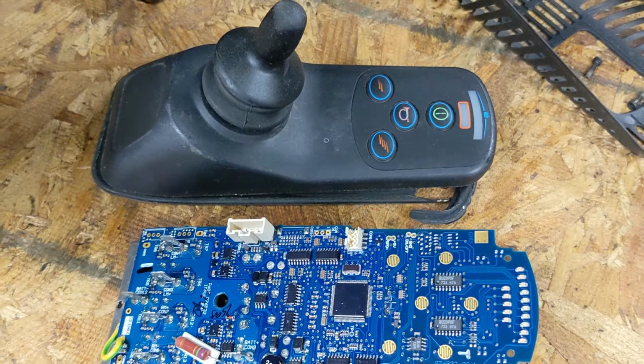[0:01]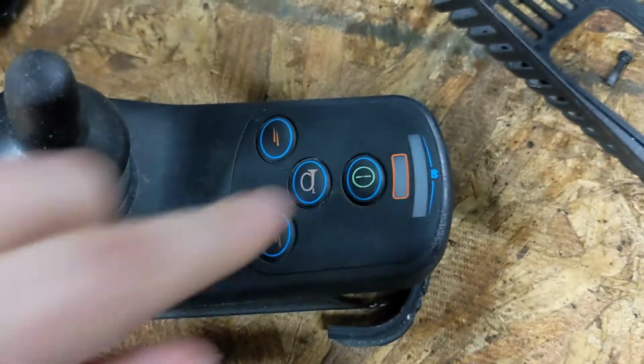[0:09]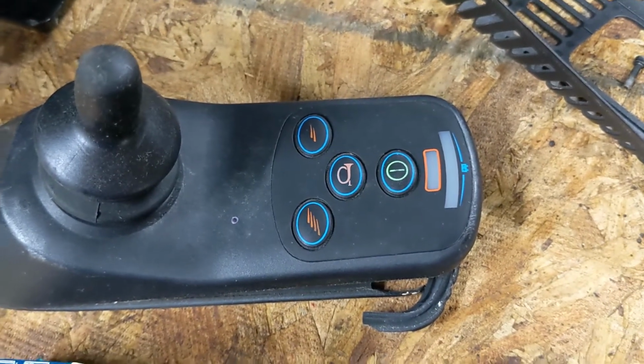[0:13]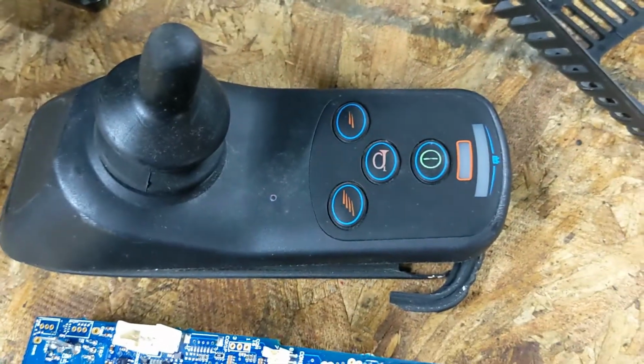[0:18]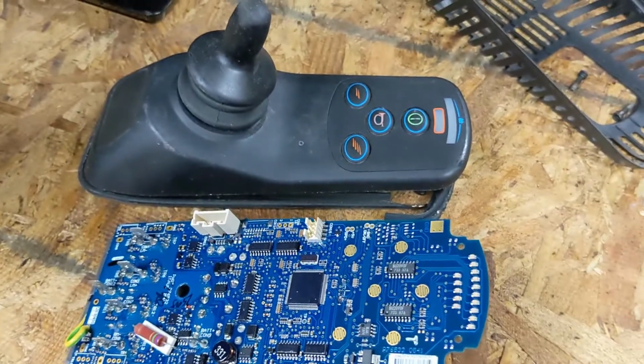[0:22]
Okay, so your ShopRider wheelchair has developed error code 8, in which 8 of the LEDs here, 3 red, 4 yellow, and 1 green, flash rapidly, signaling error code 8. That means on this model that there's something wrong with the control board.
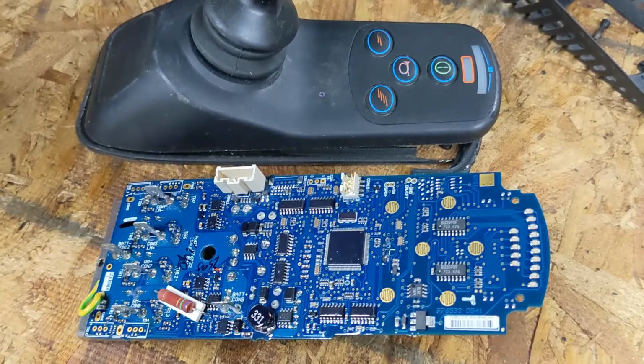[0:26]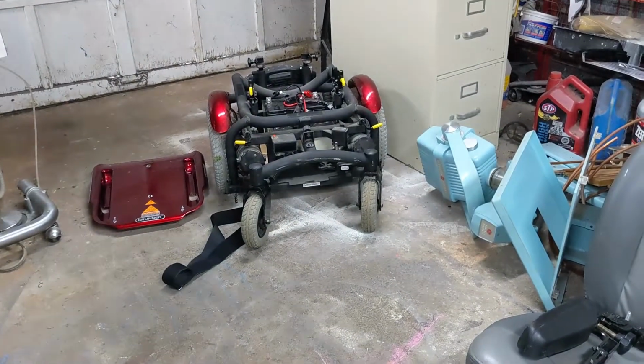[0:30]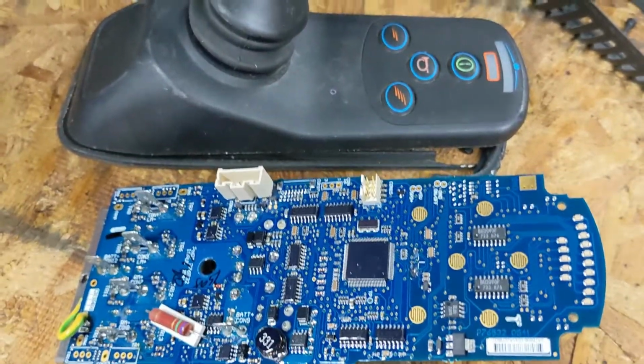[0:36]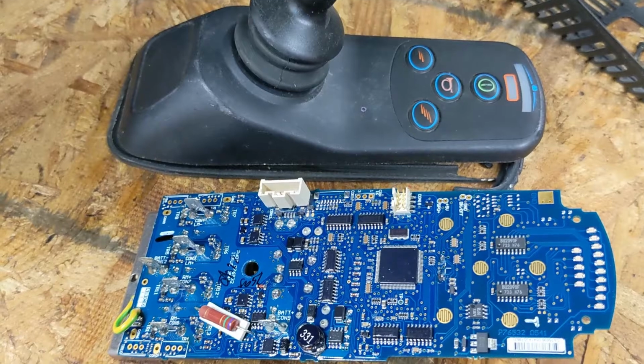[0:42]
If you're bothering to look at something this obscure on the web, it probably means you own one of the ShopRider wheelchairs, and you have just now discovered that error code 8 means that the brain board here is fried and inoperable, and you've found out that the things cost several hundred to $1,000 or more to replace. So I'm going to give you a quick overview of how to fix this and then get into the details.
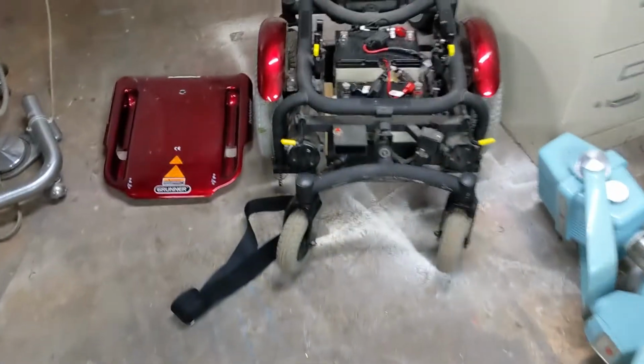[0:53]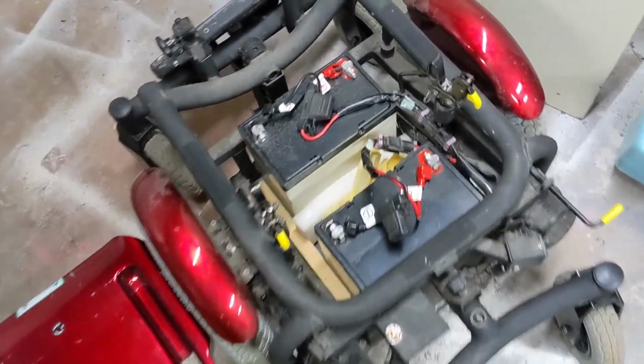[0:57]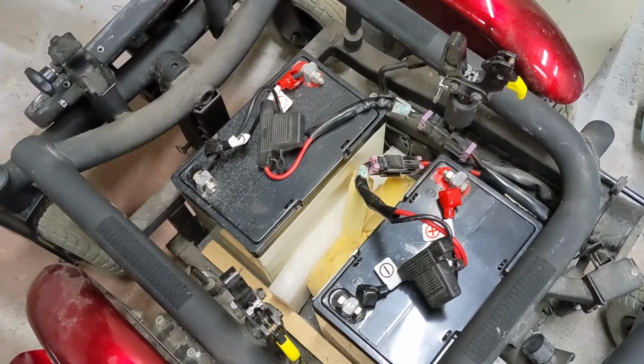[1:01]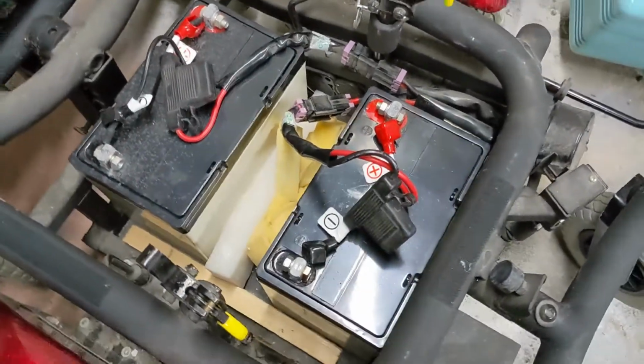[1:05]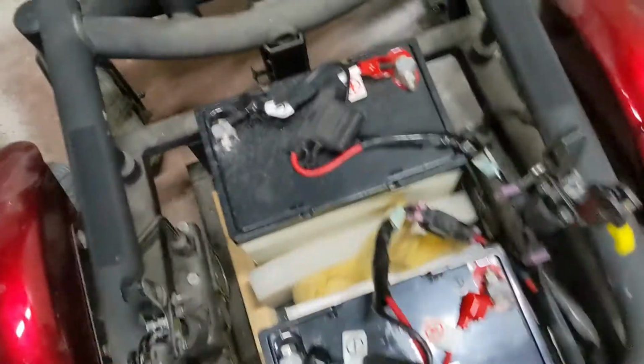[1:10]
The ShopRider wheelchair that I'm working on here is the 6-wheeled model. It runs on two 12-volt lead-acid deep-cycle batteries. There's nothing special about them. You can see that the battery compartment is big enough to contain many different types and sizes of batteries. This particular style is just a typical one.
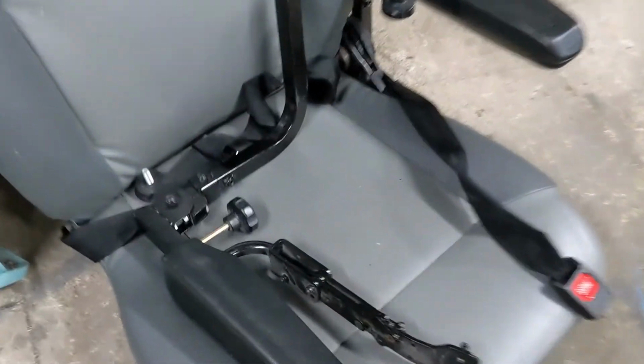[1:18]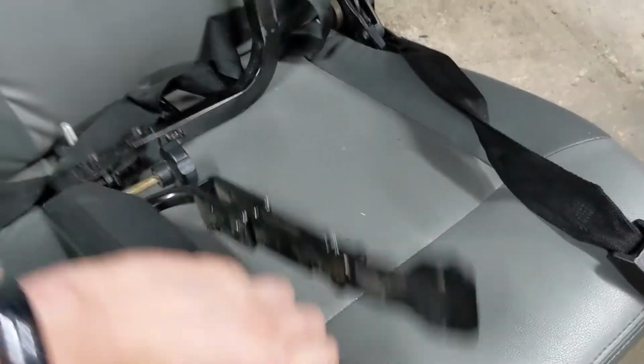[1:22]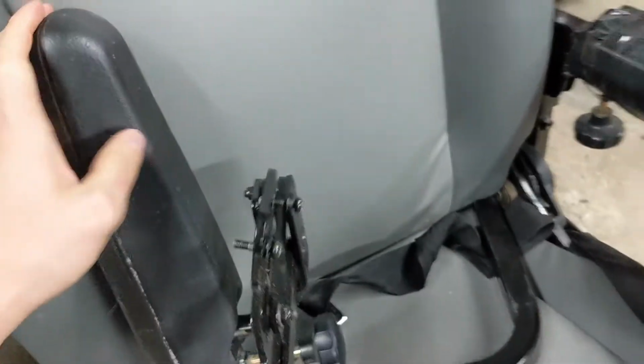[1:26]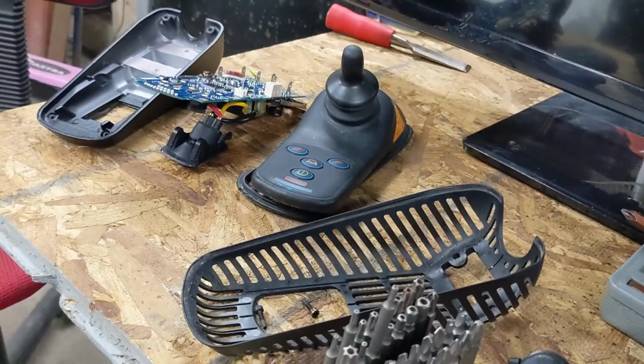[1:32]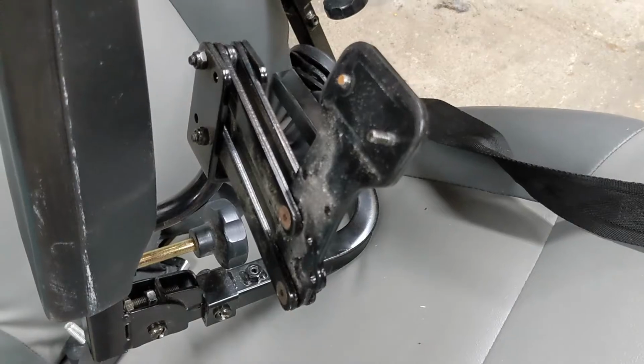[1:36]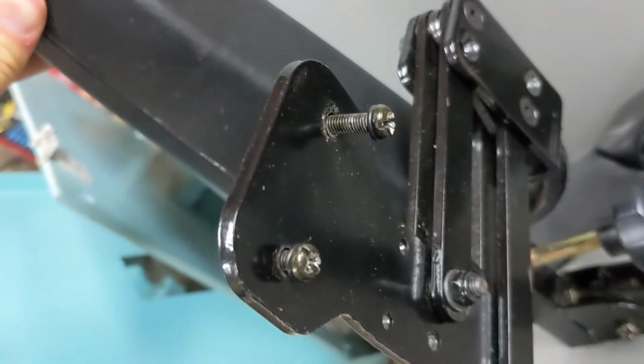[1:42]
Then the chair over here features the arm on the side where the controls are usually mounted. At least on this one, the controls swing out sideways. And this is where this mounting would normally be for the control box over here. Now, the first thing you've got to do is remove the control box from its mounting arm. This is 2 simple screws, but simple they are not.
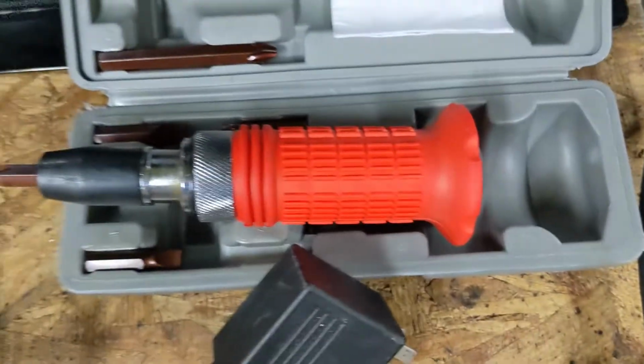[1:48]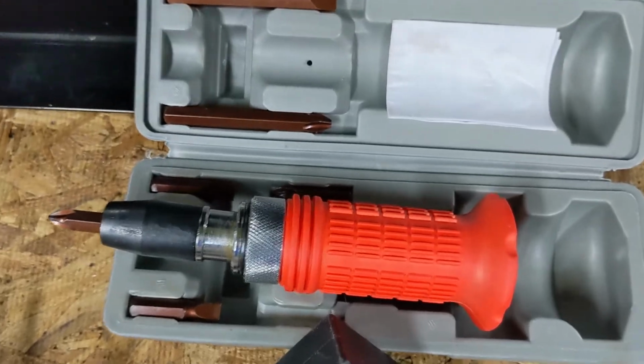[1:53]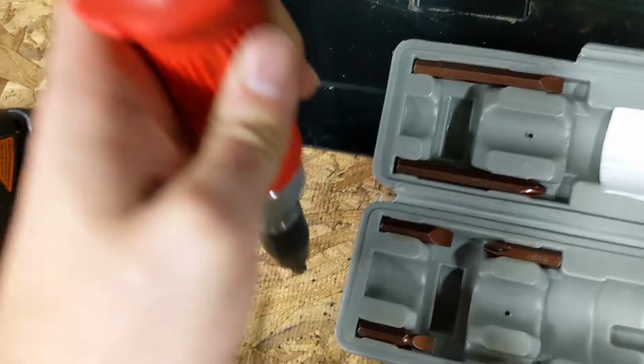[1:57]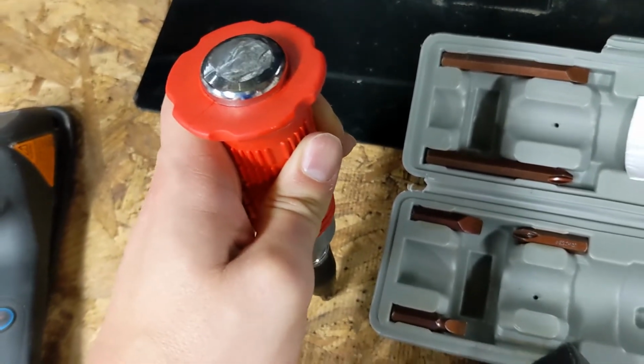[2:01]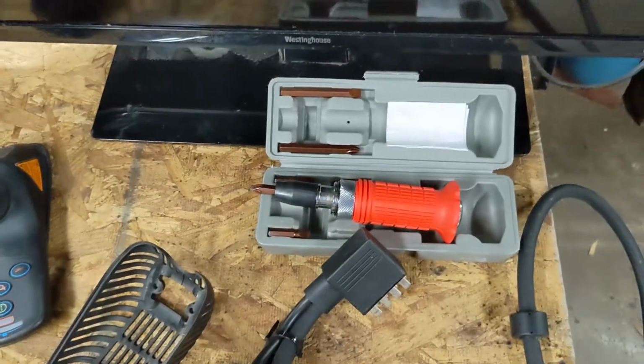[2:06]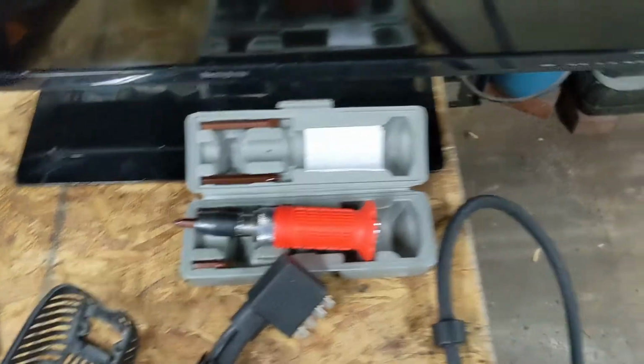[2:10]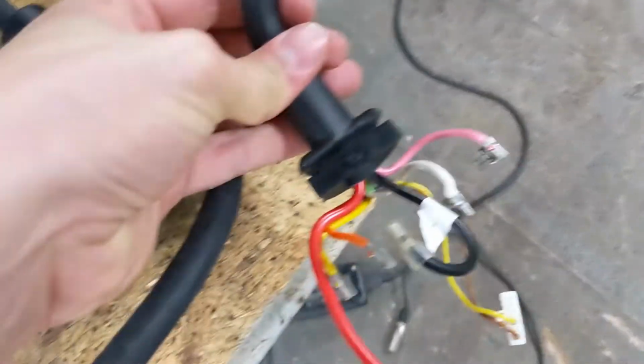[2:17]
They glued the buggers in there. So you're going to need a hammer tool like this. This is about 10 to 15 bucks from Harbor Freight. The point of this is you put this down into the screw and you literally hit it with a hammer so that the down force twists the screw as it pushes down. If that sounds extreme, yeah, you really will need that, because otherwise you'll just strip the screw trying to get it out.
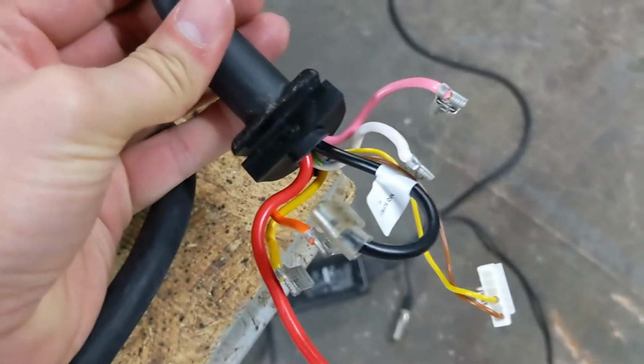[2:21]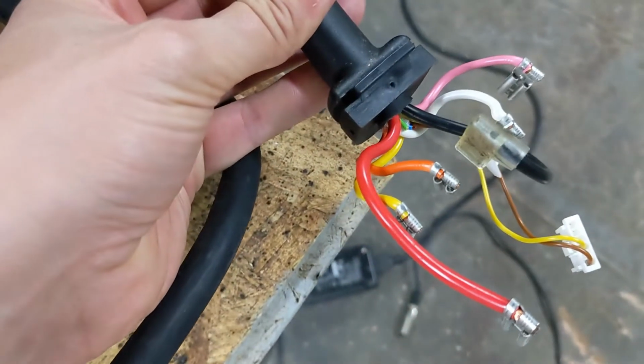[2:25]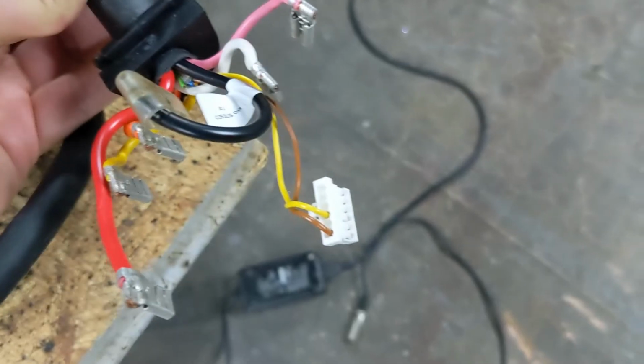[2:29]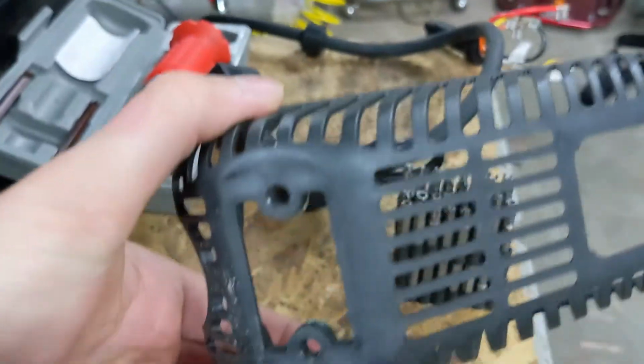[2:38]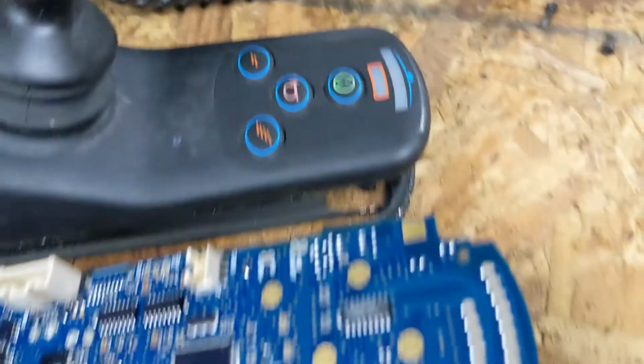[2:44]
The piece, at least on this model, unplugs here, though I believe there are other configurations available. This is the wire layout. The way this is set up is pink and white drive one motor, yellow and orange drive the other. Power in comes from black and red, and I'm not sure what the little tab on the side there is. That's probably some kind of error wire.
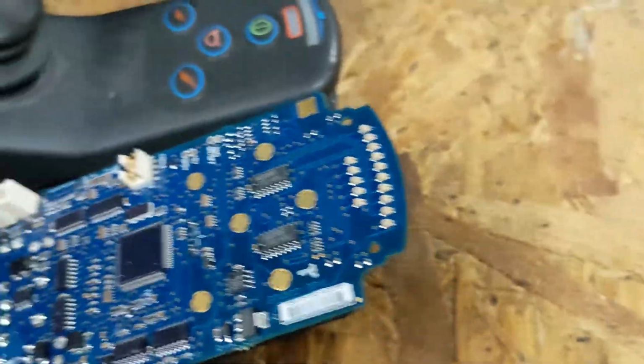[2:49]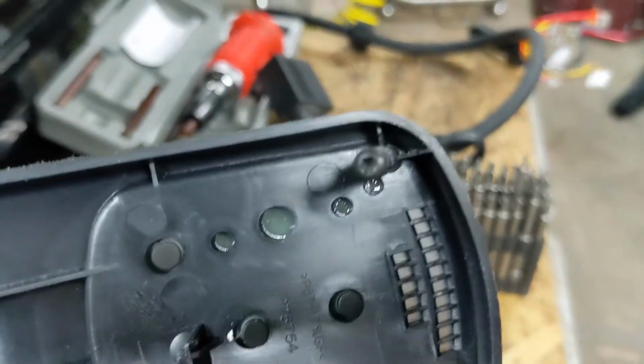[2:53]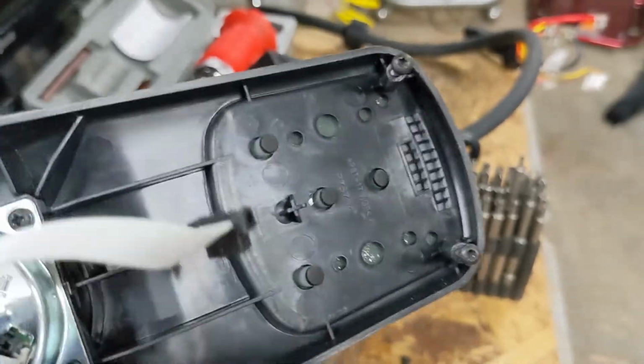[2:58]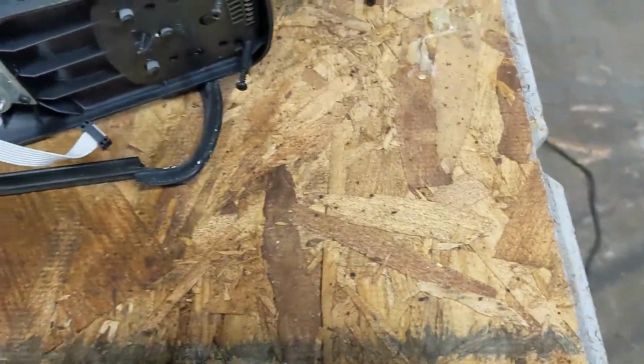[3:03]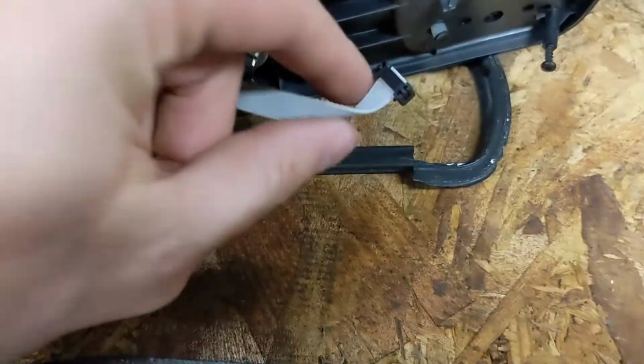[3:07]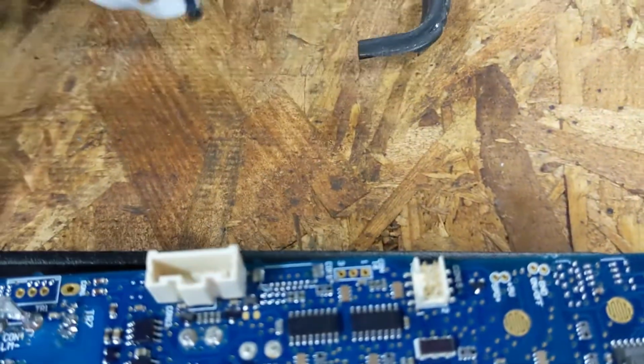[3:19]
Once you have removed the 2 screws here that anchor it to the arm of the wheelchair, then the whole assembly can be taken apart. This is held in place by 4 screws. 1, 2, 3, 4. These are star keys, but they're not keyed with anything special, so a standard star bit will work. Once that's open, what will greet you is something a lot like this. This is all put together. This plugs directly into here in the way you would expect. Just like that. So just pop that out, set that aside,
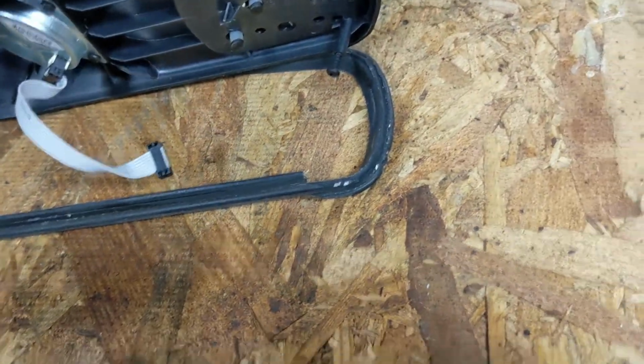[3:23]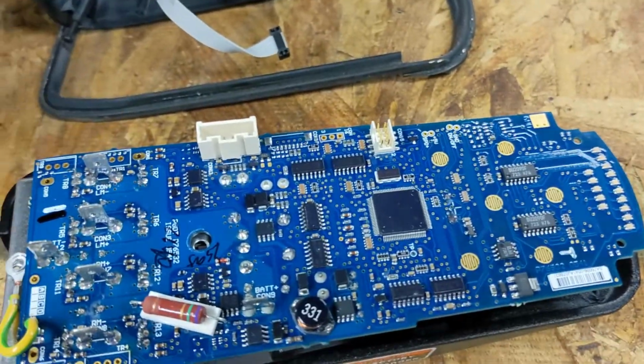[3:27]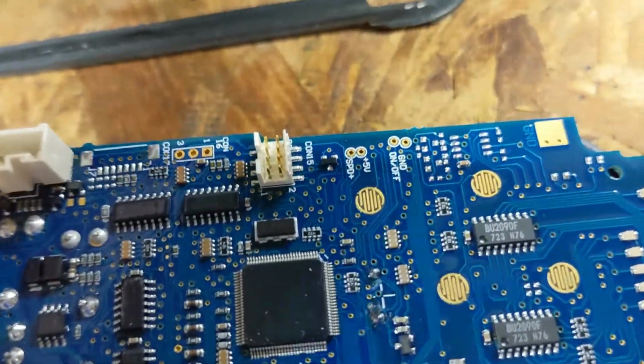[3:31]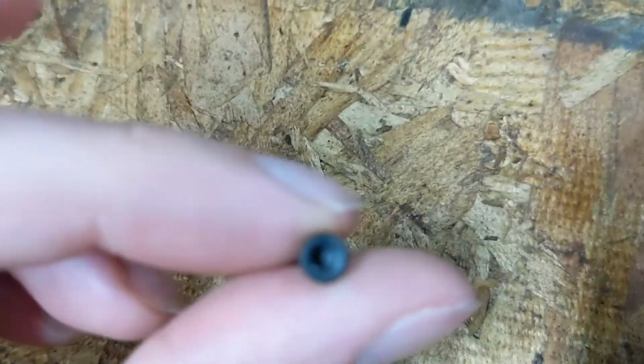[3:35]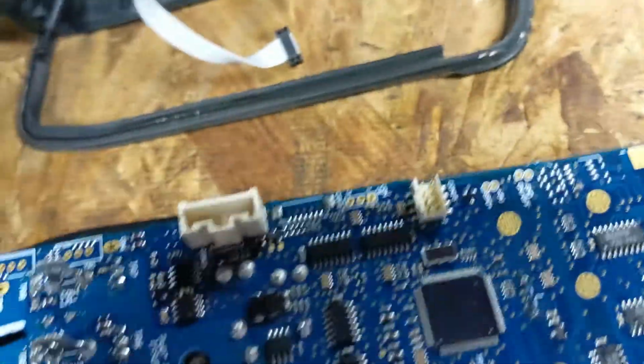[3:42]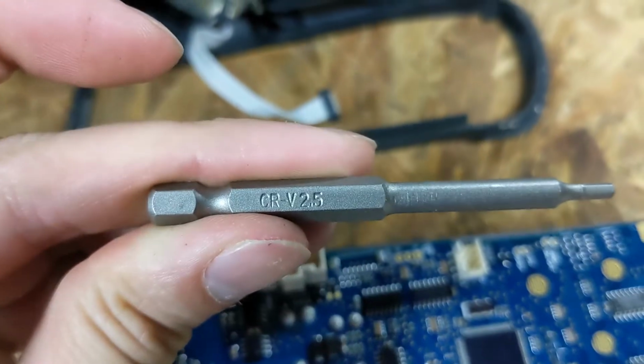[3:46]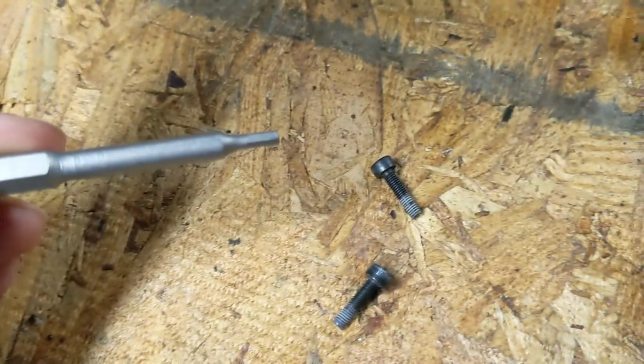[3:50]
take off the gasket as well. You won't need that for this operation. Now, once you get to here, this thing seems to be one gigantic brick, and it's very hard to see how it works, but it's actually held together by 2 bolts. These 2 little tiny bolts, they're not star keys, they're hex heads. Let's see, are these labeled? Yeah, okay. This is the hex head key that operates these 2 bolts.
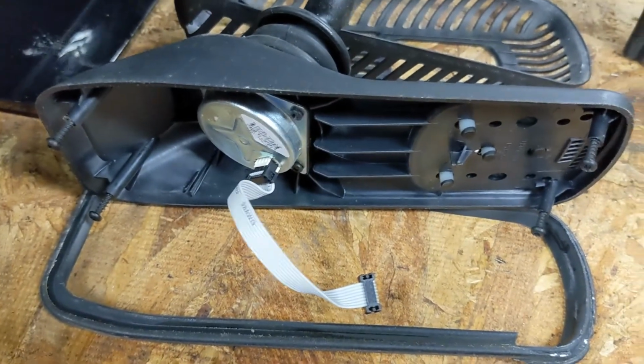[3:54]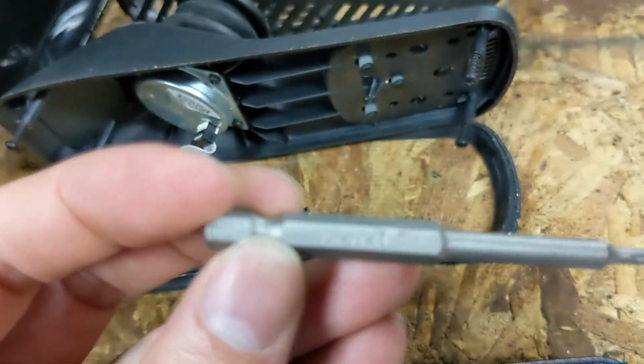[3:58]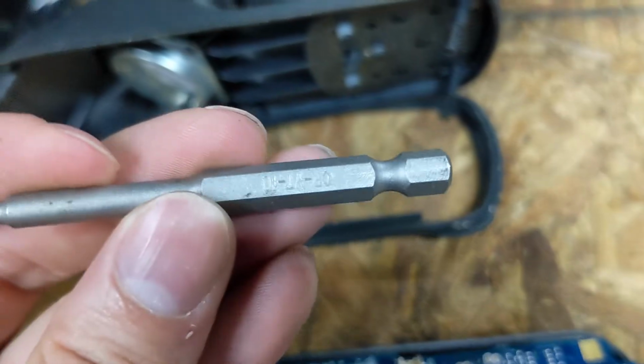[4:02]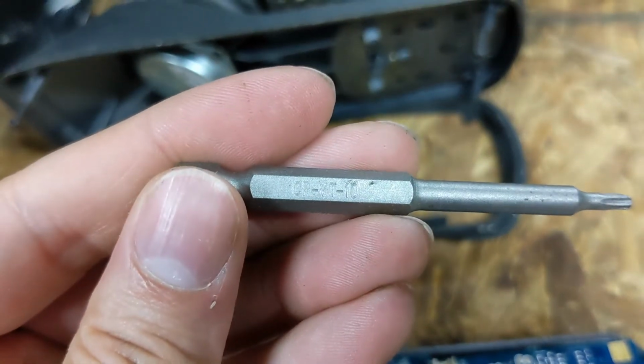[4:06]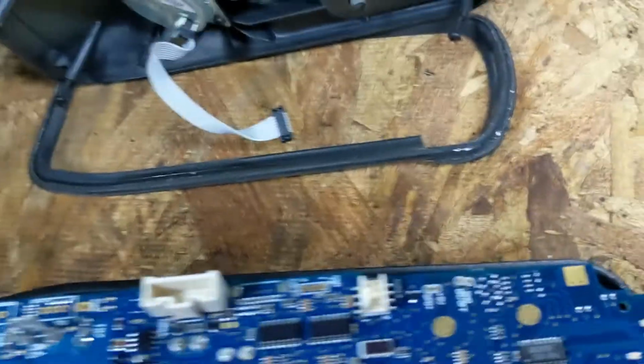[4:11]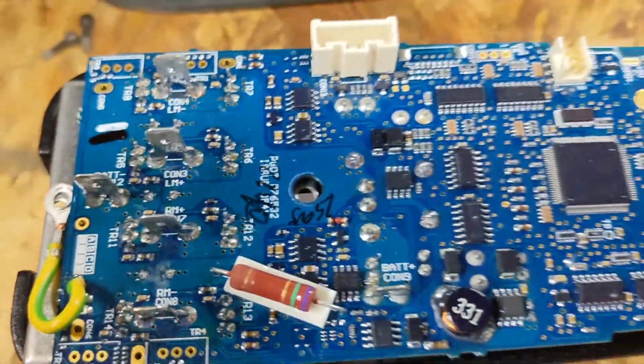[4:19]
And if you're interested, the star key that will do the 4 bolts that hold that on is, let's see, is this right side up? No, I'm holding it upside down. Okay. This is the star key that'll work for that. There you go. So that's how you get this thing apart. These 2 screws are not nearly so bad. They're not glued in. Once you get these apart, you can take this apart with one caveat.
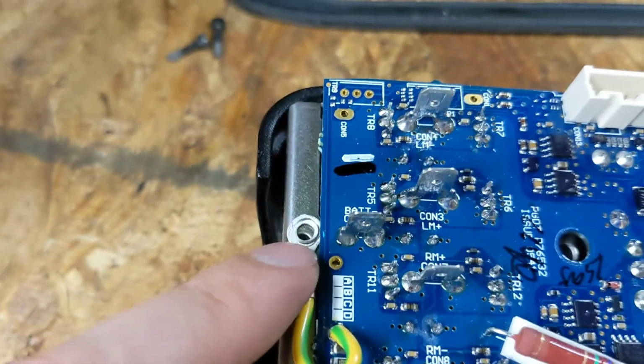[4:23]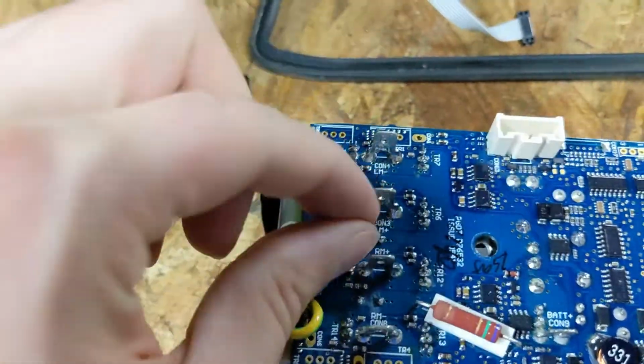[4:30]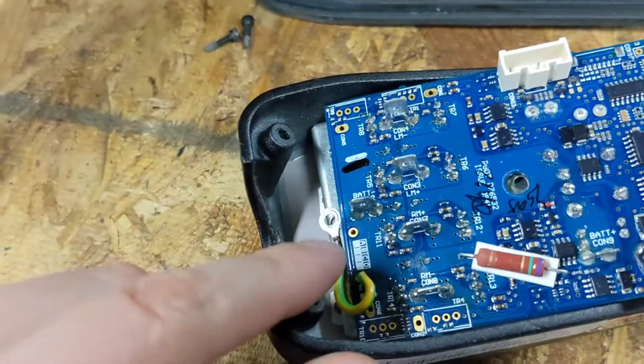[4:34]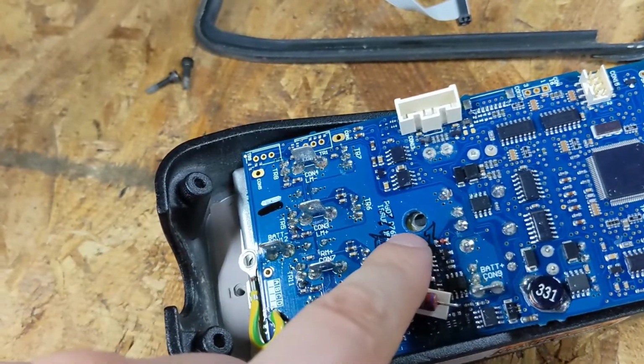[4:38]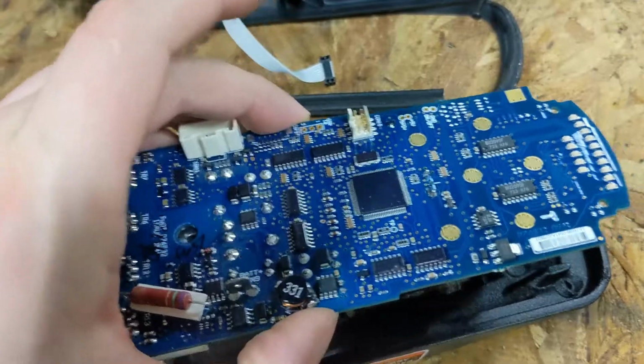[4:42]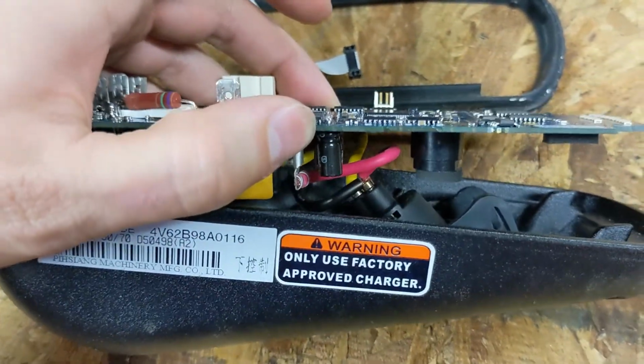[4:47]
This screw back here is not accessible until you pull these wires off. So when you open this thing up, you've got to pluck off all the wires, carefully taking those off with a pair of pliers. That exposes this last screw here on the back. Once this and this have been removed, then you can pull this part way out. It will then snag on the power charger port, which you see here.
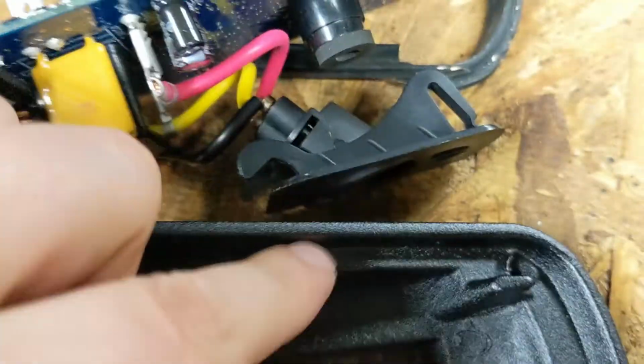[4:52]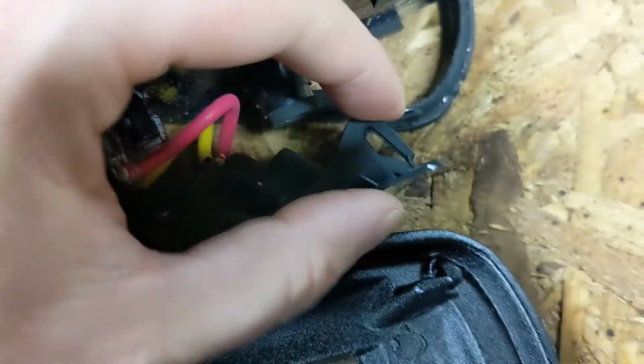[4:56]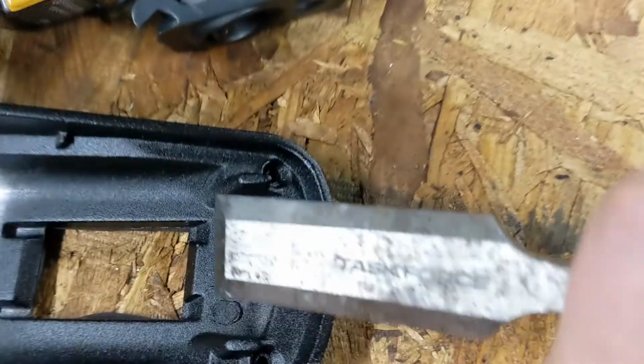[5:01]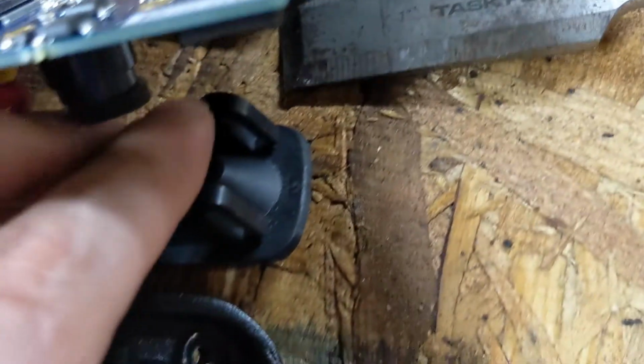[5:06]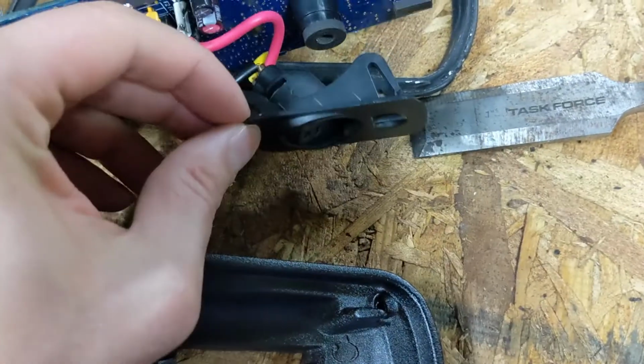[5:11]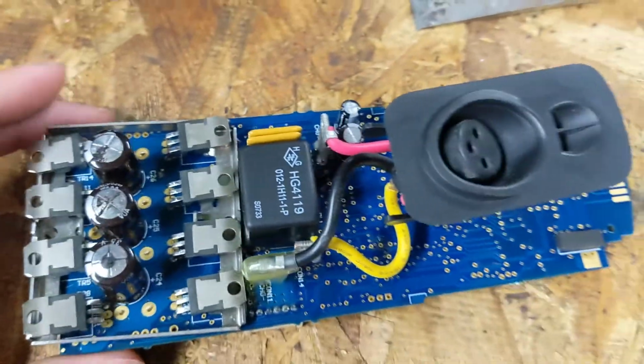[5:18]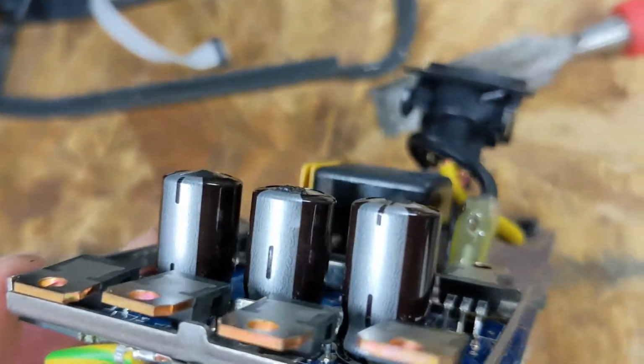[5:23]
The power charger port is designed to hook in here, and then there are 2 tabs here that lock it into place. So you've got to hold this like this. Take a chisel or other wide screwdriver and press down on both of these two tabs at once. Once that's the case, this charger port will pop out, and then the whole assembly can be disassembled. Now, a quick look at this on the underside shows the issue here. Anyone that's worked on electronics before immediately knows what we're looking at here.
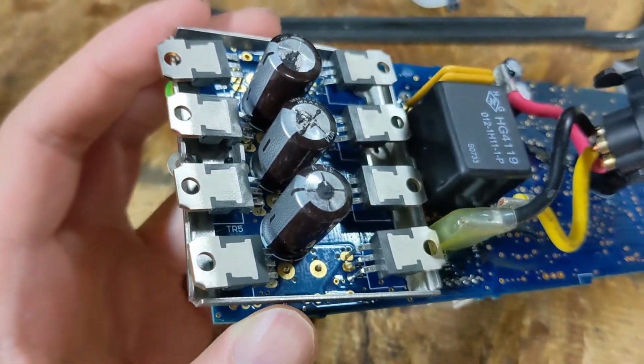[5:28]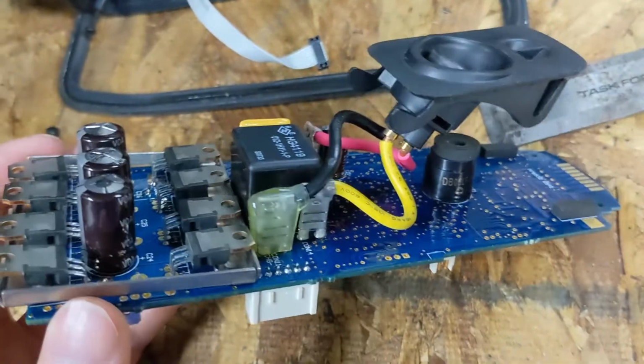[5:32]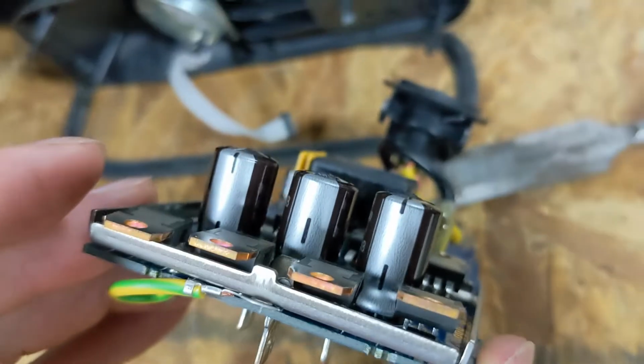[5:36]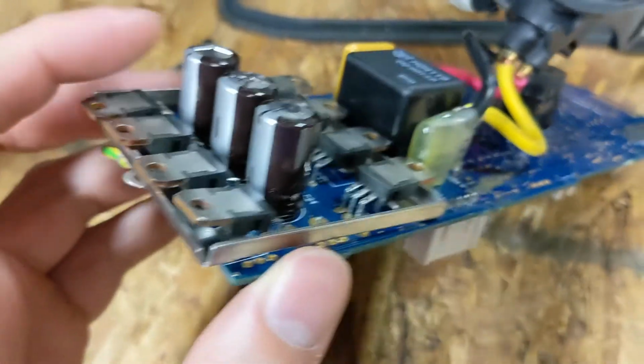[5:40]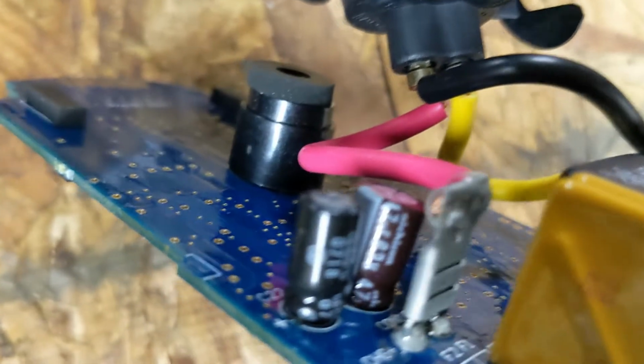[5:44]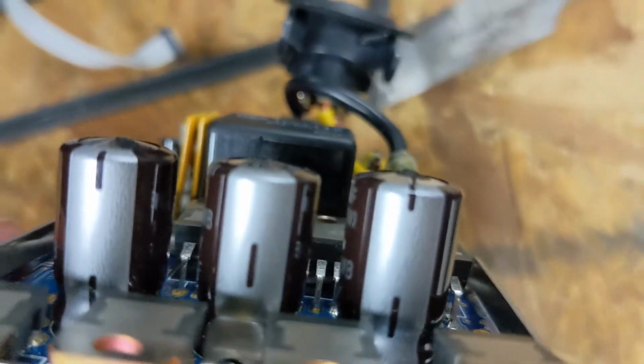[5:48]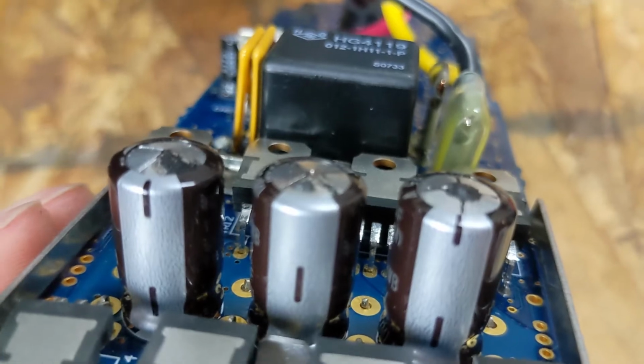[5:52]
I had to look this up, and credit goes to the repair guy who put this out on the web, but the reason that these things fail and give error code 8, and apparently sometimes error code 7, is that the three, I believe these are electrolytic capacitors here, fail. A good capacitor should always have a flat top. These are generic good capacitors. Whenever you see a capacitor like this where the top has bulged out like that, that means the capacitor is trash and you have to replace it.
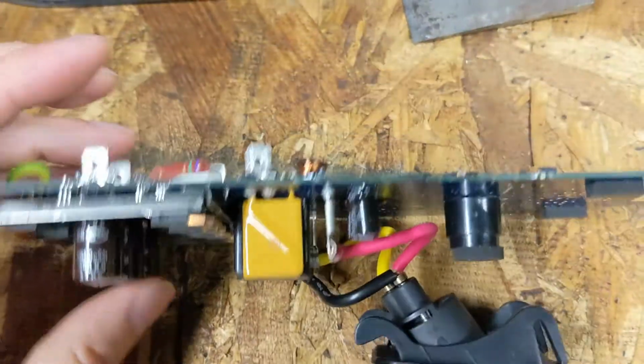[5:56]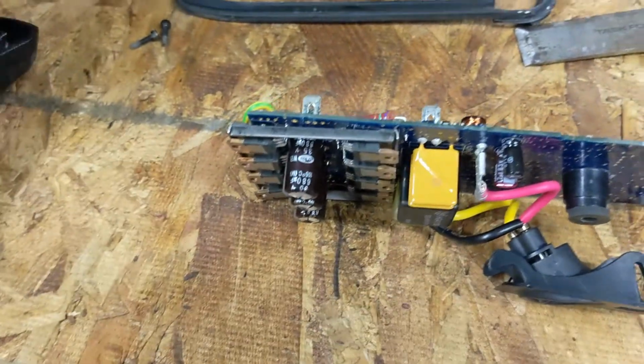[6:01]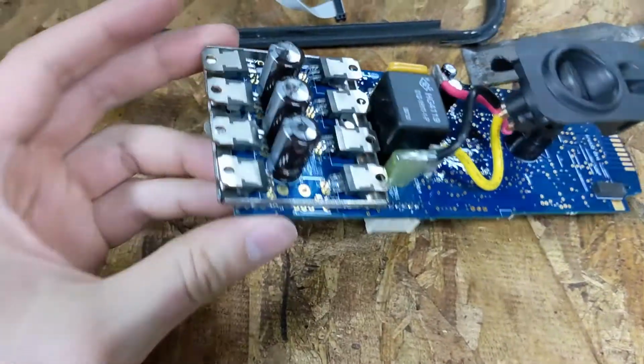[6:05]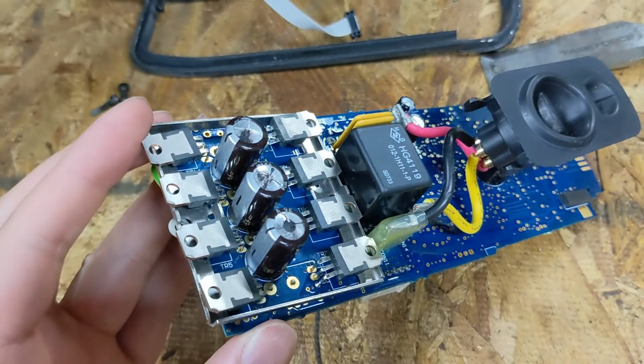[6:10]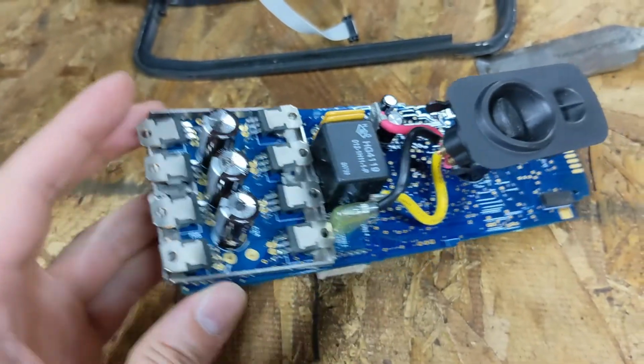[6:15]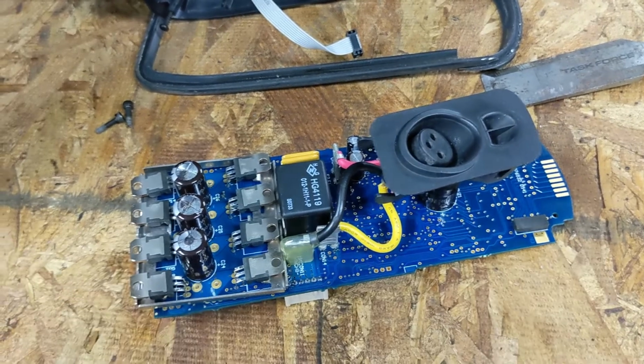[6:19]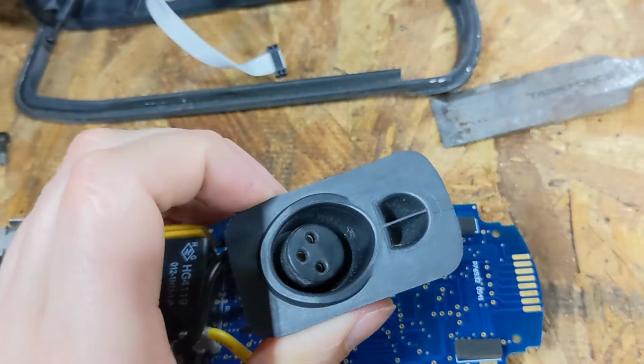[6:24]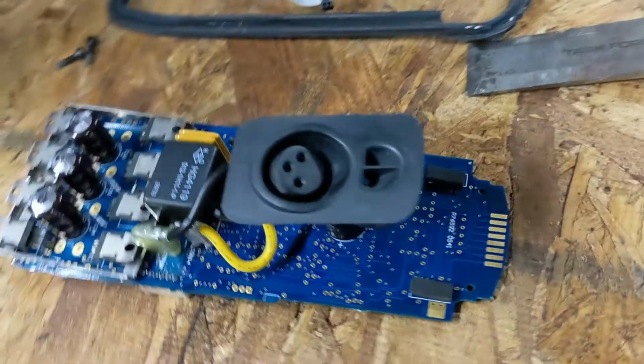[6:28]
The bad news on a setup like this is if you ask for the entire box, you're going to pay $250 to $1,000 depending on how good you are at shopping. The capacitors, by comparison, are a few cents each, and you can order them online. So what I'm going to try and do is solder in 3 replacement capacitors of equal values, and then reassemble this. And then if I get it right, this video will get posted online, and everyone will be able to copy my work.
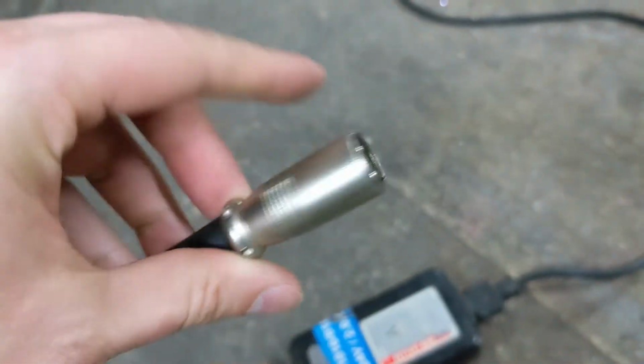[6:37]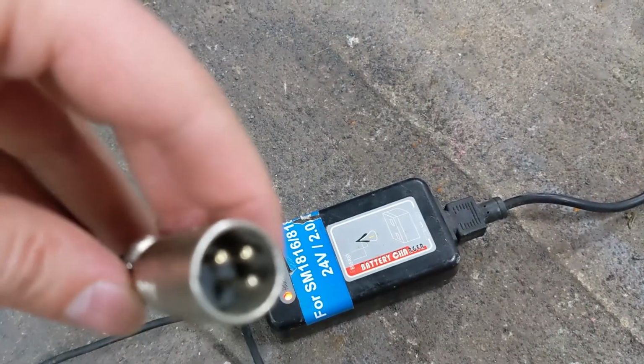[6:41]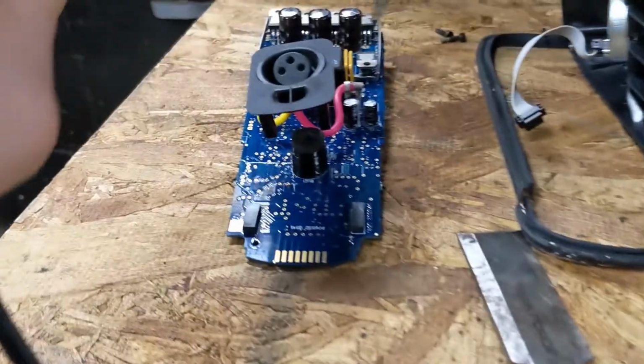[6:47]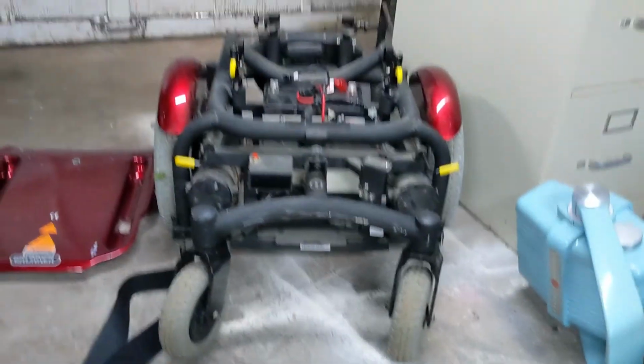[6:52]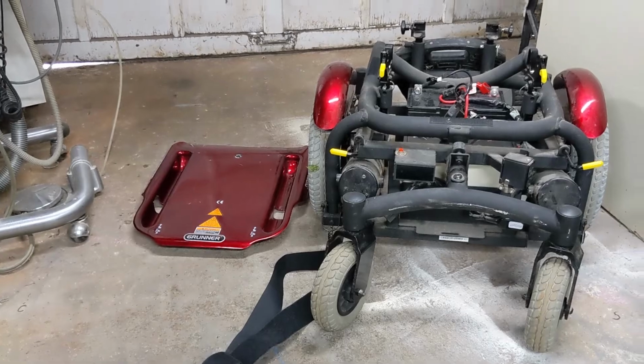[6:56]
Oh, and just an FYI, wheelchair power supply here, if anybody's got this new or used, you may think it's something special. It is not. Any generic 12 or 24 volt charger that's commonly used on scooters and other inexpensive Chinese 12 volt lead acid or 24 volt lead acid products is perfectly compatible with this and will jack right into the power supply. So yes, you can charge a wheelchair with your scooter charger or with anything else you got handy. Any 24 volt charger will charge this without complaint.
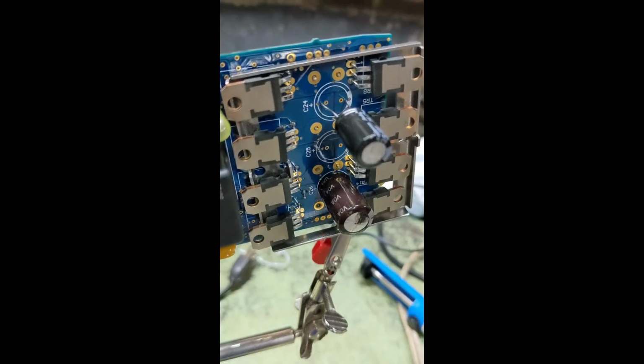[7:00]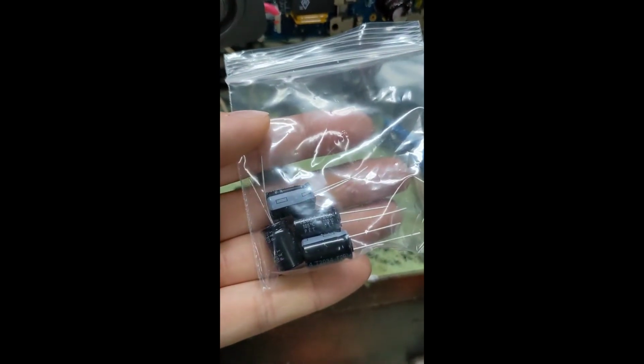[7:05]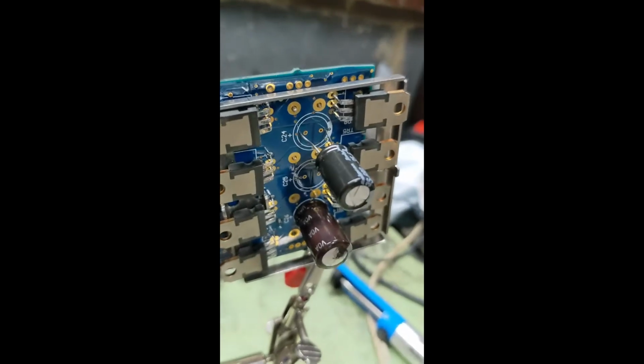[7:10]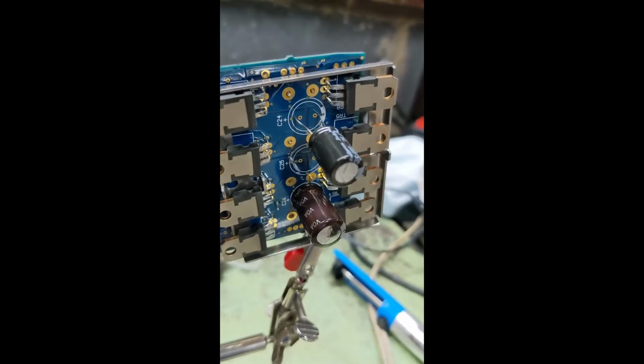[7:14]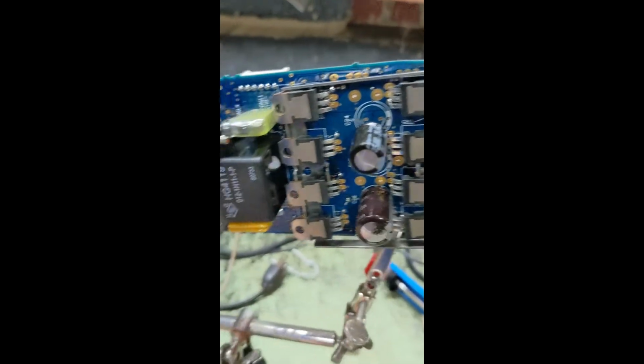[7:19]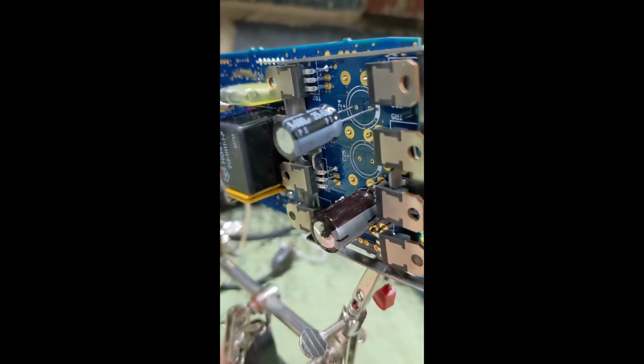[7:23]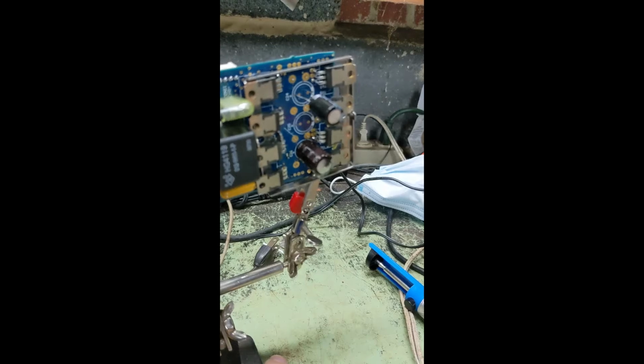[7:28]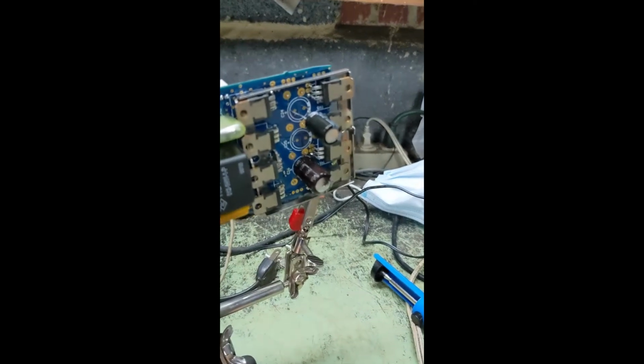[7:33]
After several days of waiting, the parts finally arrived from Amazon. They're about $6-7. What you're going to need for this is a 680 microfarad capacitor rated for 35 volts. You can see there's one of the old ones. You got to match these things such that the negative terminal is facing forward and the other terminal faces the other way. It doesn't really matter if you get it right as long as they copy each other. As long as this and this are the same, you're good to go.
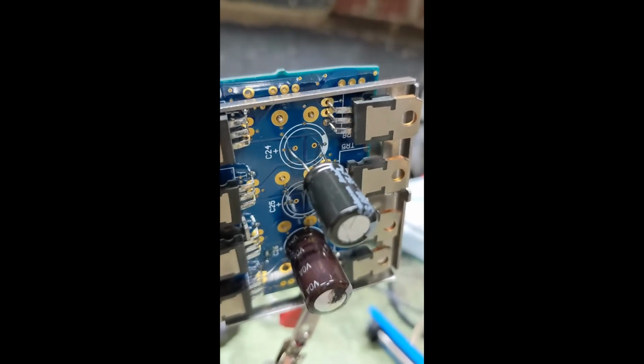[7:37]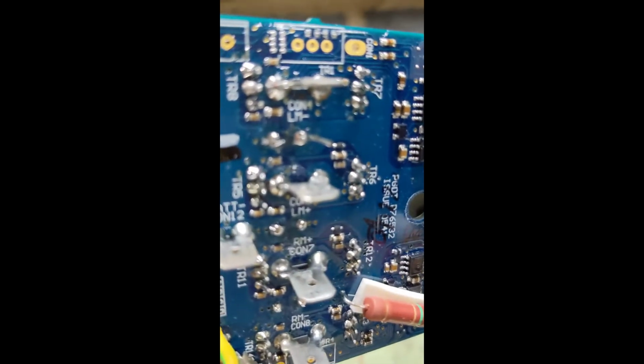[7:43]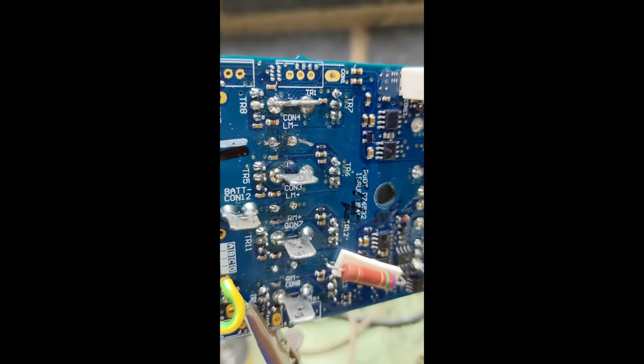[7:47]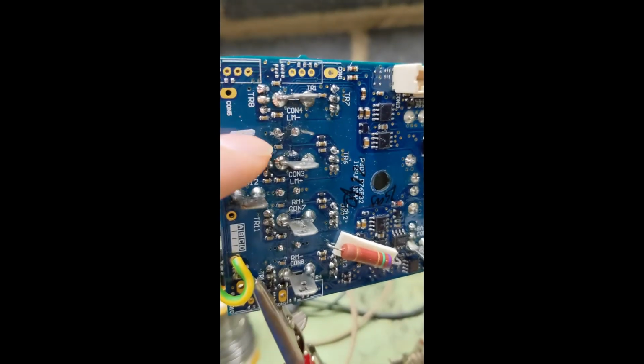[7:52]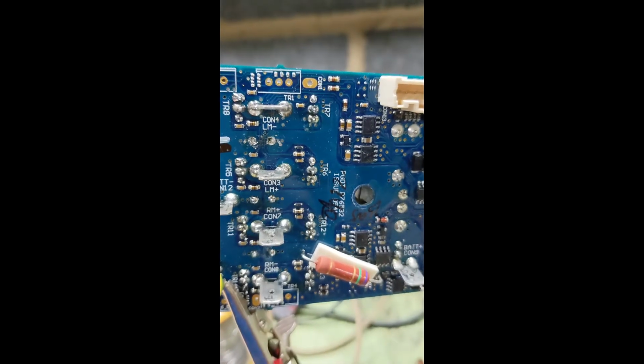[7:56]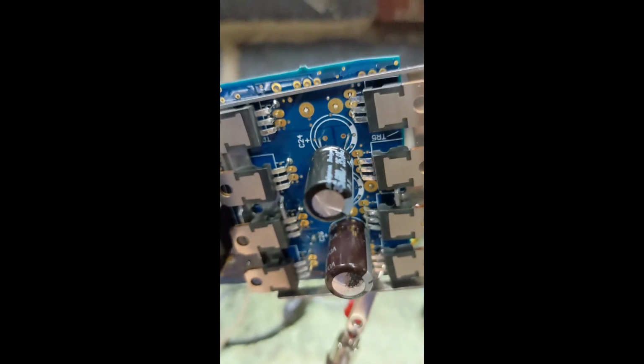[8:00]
Also be aware that the original gold-plated terminals there are quite difficult to unsolder and get the piece through there. I've been having a heck of a time getting these things to go through, but fortunately they provided 3 mounting holes. 1, 2, 3. And 1, 2, 3 on the other side too. So if the solder jams up like it did for me, that's not a problem. You can just use one of the other 2 mounting holes and it should work just as well.
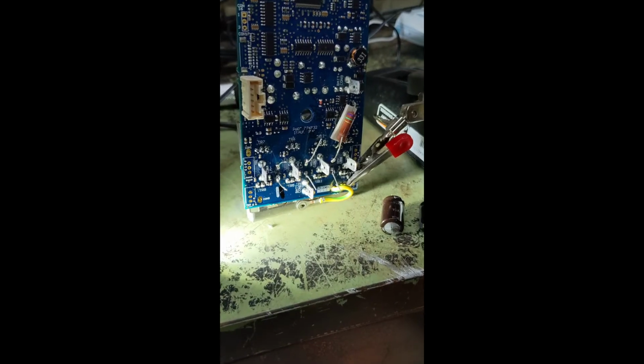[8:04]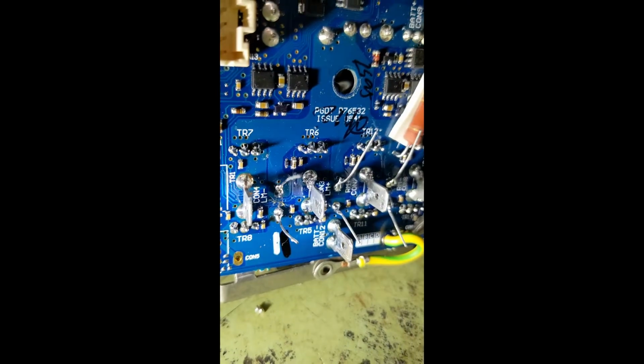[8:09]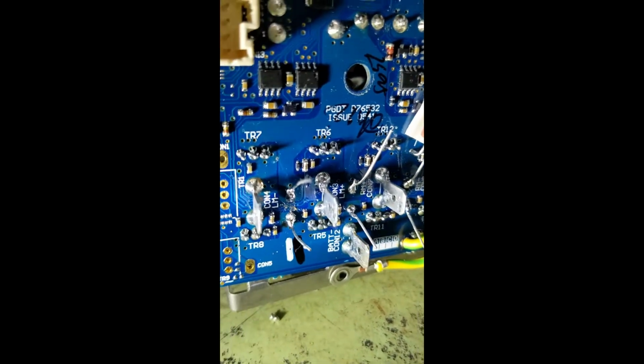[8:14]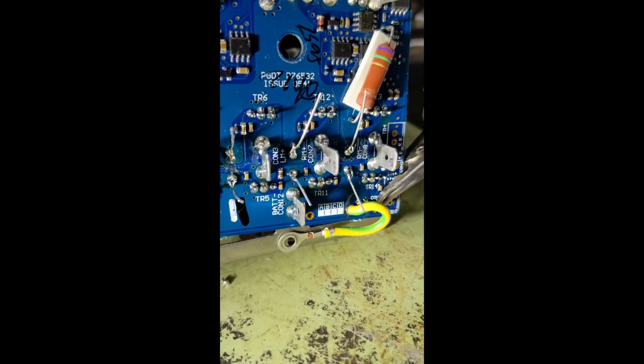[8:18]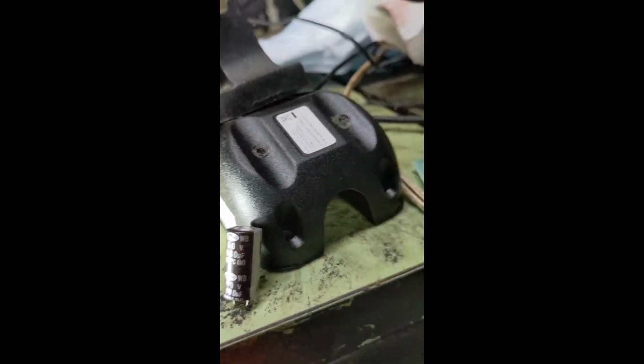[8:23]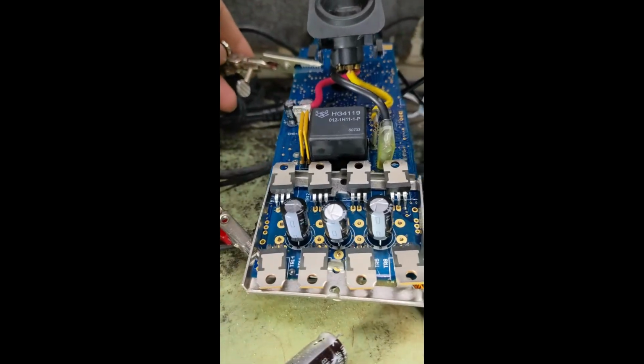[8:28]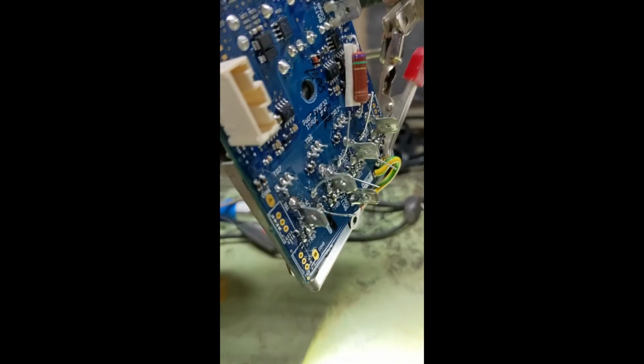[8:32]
Alright, so this is what the final job should look like. Anybody that's a professional solder expert would know that I'm pretty sloppy, but I got the job done. The old solder joint there is connected to the new wires coming through. We've matched the polarity, so the negative side on here is facing the same way as it was before. So now all we have to do is trim these off to make them safe to work with again, and then reassemble.
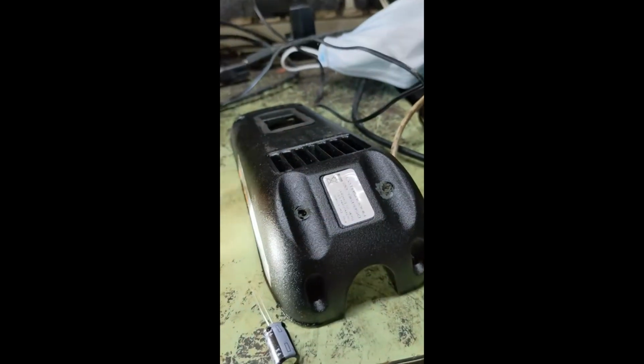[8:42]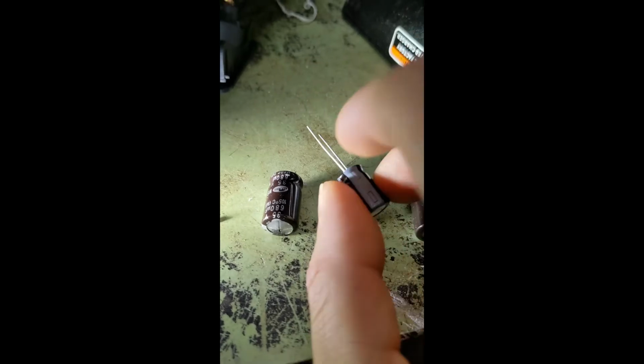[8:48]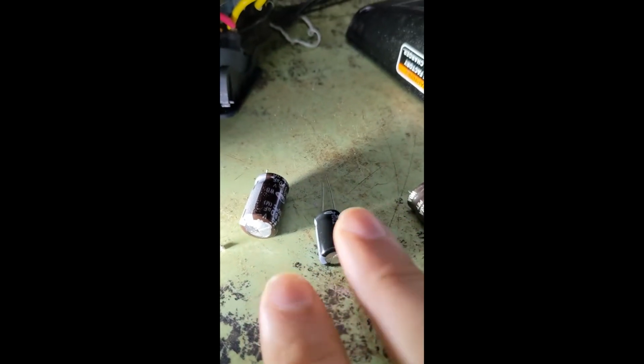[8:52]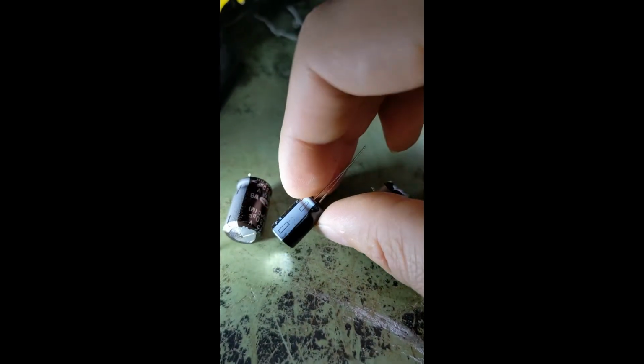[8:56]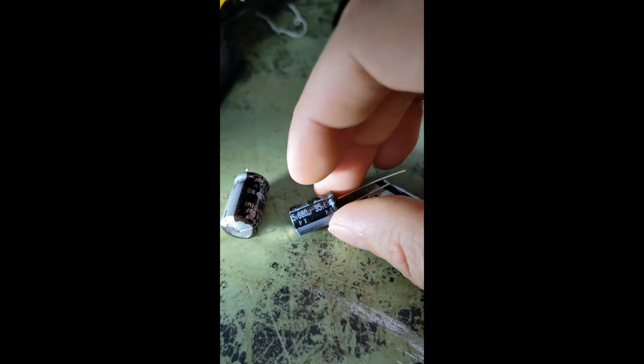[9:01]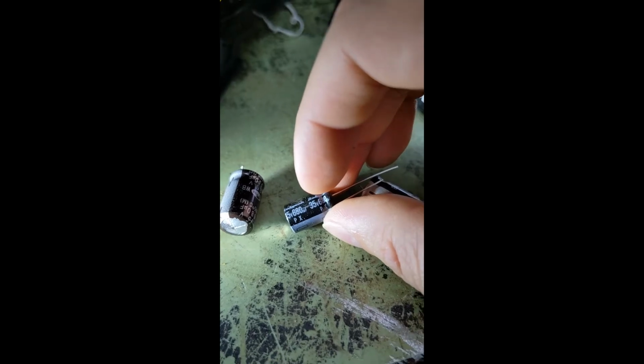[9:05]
Just an aside, you can see these are the old capacitors here that burned out. This is the capacitor from Amazon. You can tell at a glance that the Amazon capacitors are smaller despite having the same rating. Anytime you need to match them, you don't care about the physical size as far as performance goes. You just have to match that 35 volts, 680 microfarads.
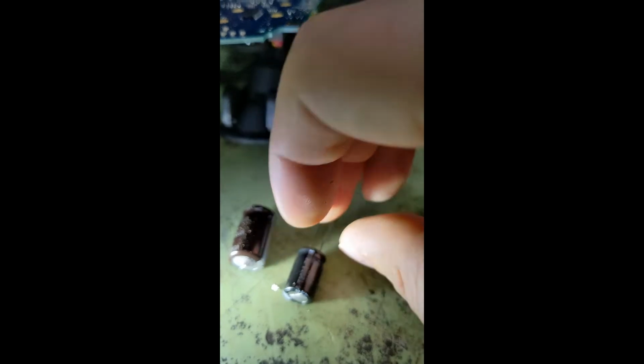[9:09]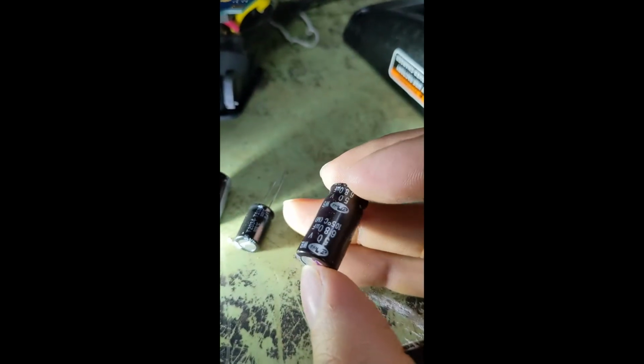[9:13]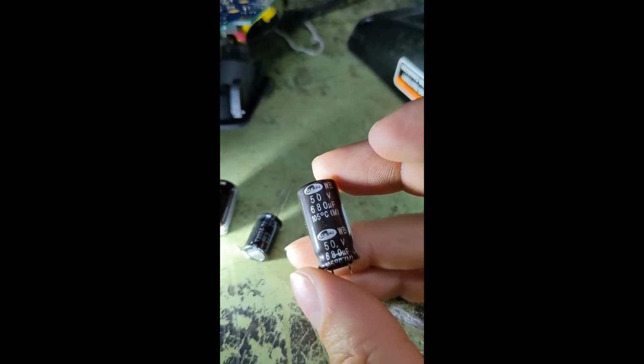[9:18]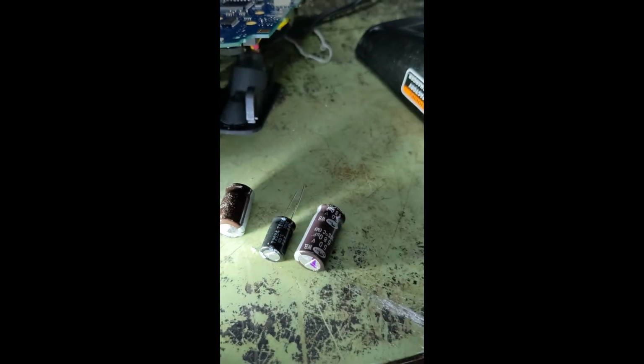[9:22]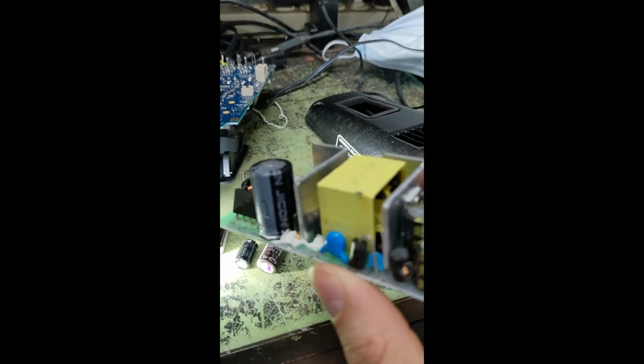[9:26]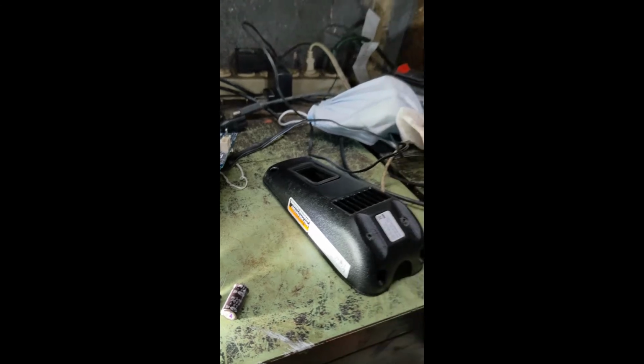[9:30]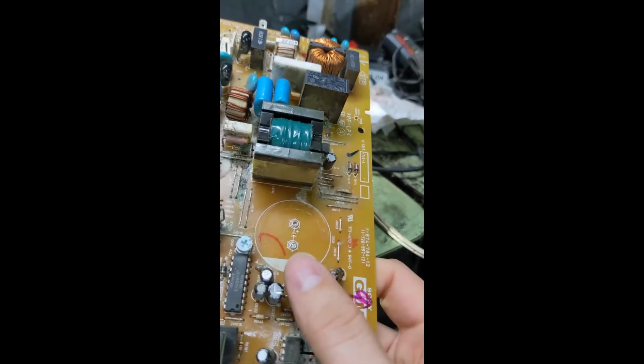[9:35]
And occasionally when you do this, it's possible to get a close match just from old scrap electronics. This one is also 680 microfarads, 50 volts, which explains why it's a little bit bigger. But that was pulled from this, a power board from a defunct television. So you can go hunting for these capacitors on old electronics. That's certainly a thing you can do. This one here resurrected a television with dead capacitors.
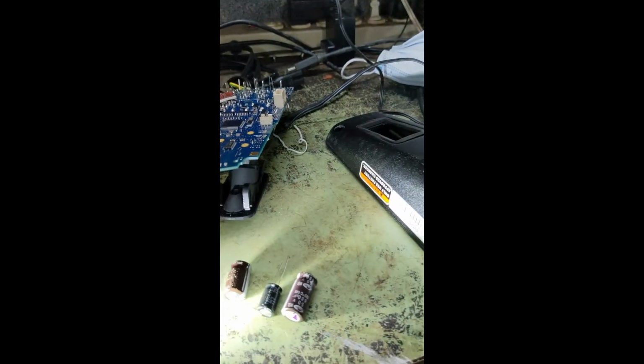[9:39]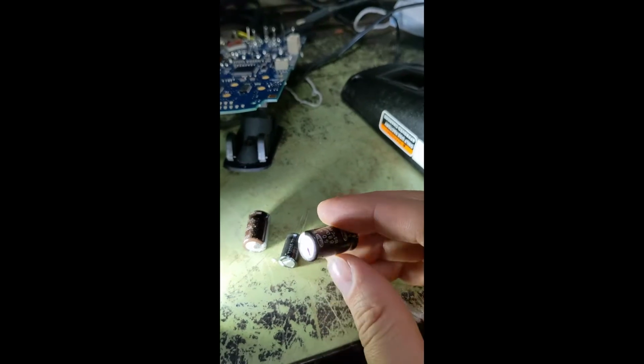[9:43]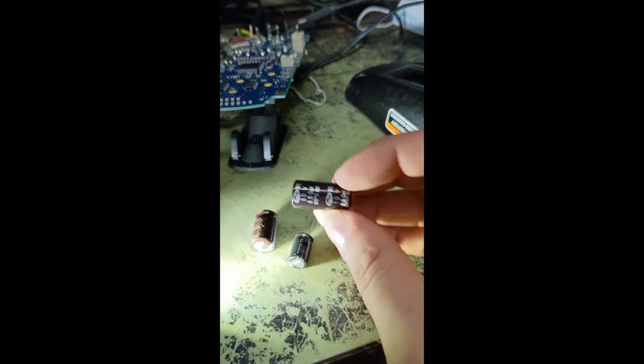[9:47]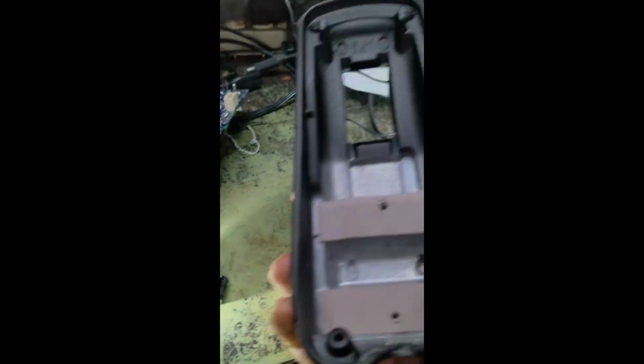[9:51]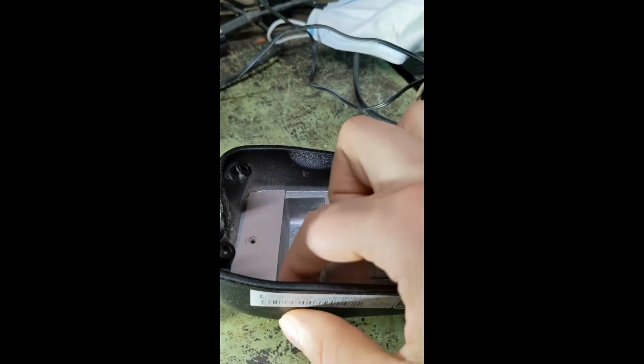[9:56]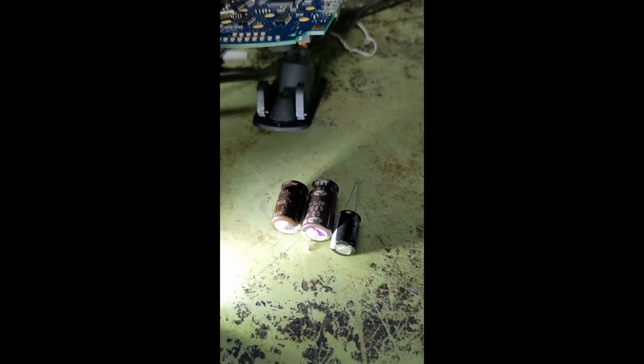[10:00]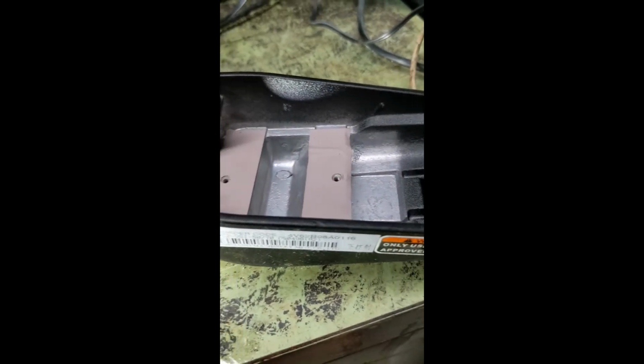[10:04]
But as is often the case when you do that, it's hard to find enough of them. We need 3 for this. 1 wasn't going to cut it. And this one was considerably larger than the original. Meaning that in this case, with a housing here, where there's only this cavity to store the capacitors, going bigger and cheaper wouldn't have made much sense, even if we'd had 3 capacitors instead of only 1.
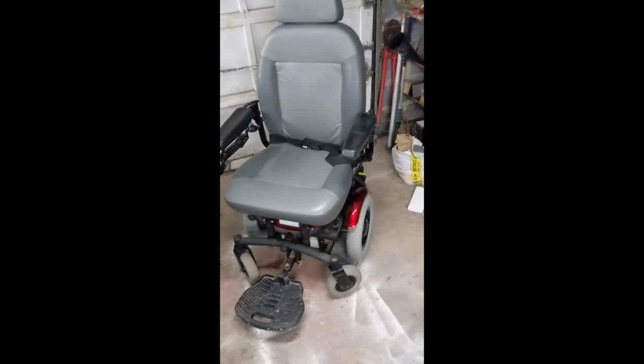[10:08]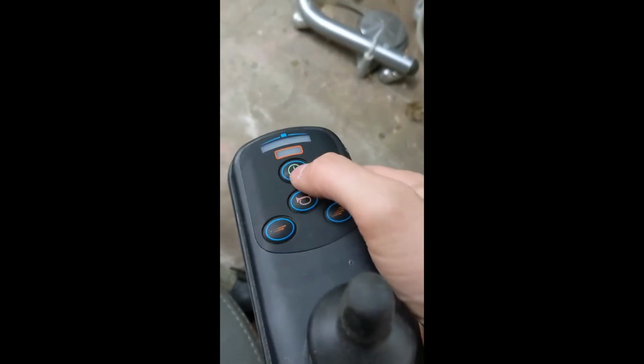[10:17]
And at last, here is the entire thing reassembled and back in business. This is what you should see when you turn one of these on. We get a reasonable number of lights. What else? 3 red, 4 yellow, and however many green represent battery charge. And you can see we now have a working chair. Works like it's supposed to.
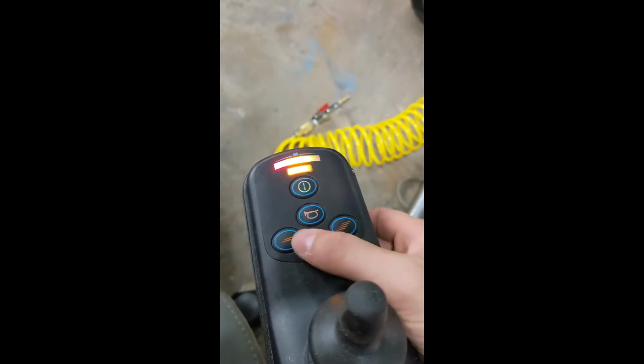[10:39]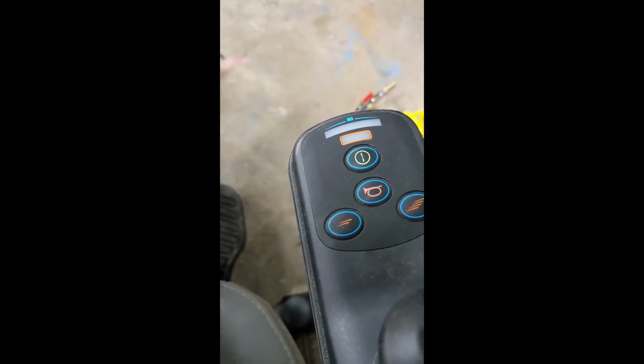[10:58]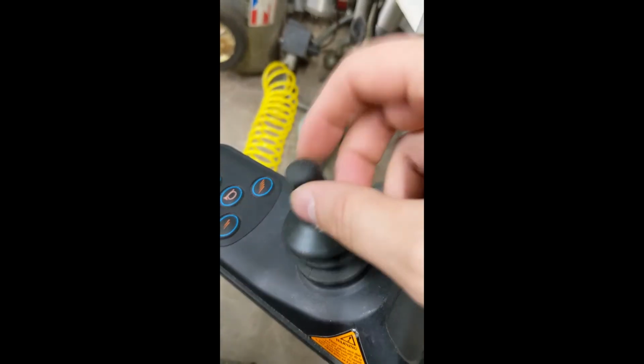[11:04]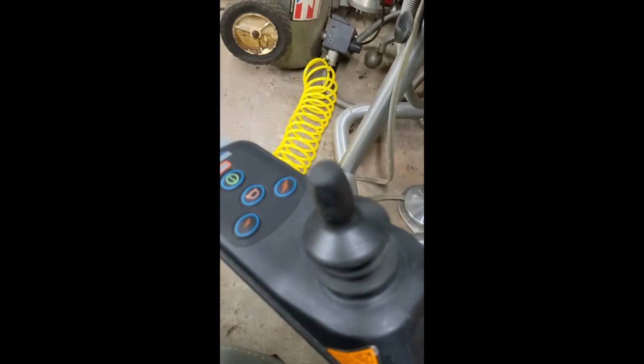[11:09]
The only caveat here is that replacing the capacitors, as I showed you, does not instantly fix everything. What replacing the capacitor does is take it from an error code 8 to an error code 7. Now, you think, how does that help? Okay. Error code 7 is supposed to mean that the joystick is faulty. The joystick is not faulty. You don't need to replace it.
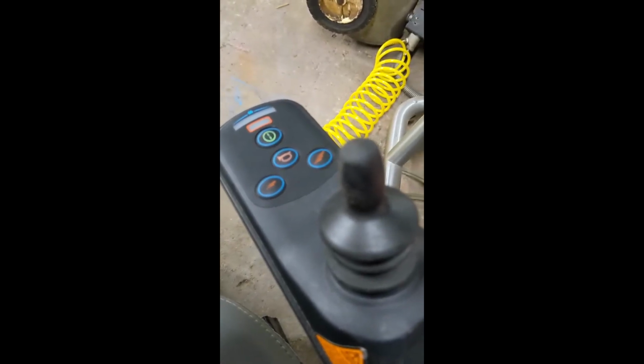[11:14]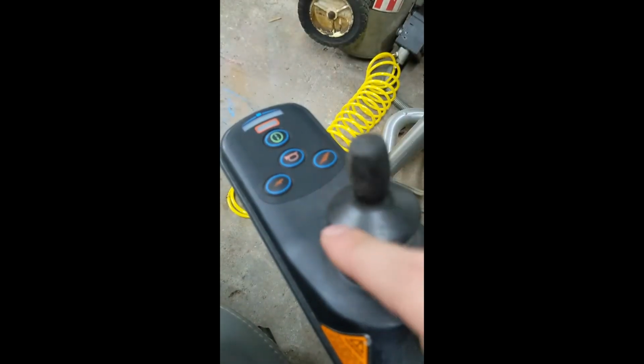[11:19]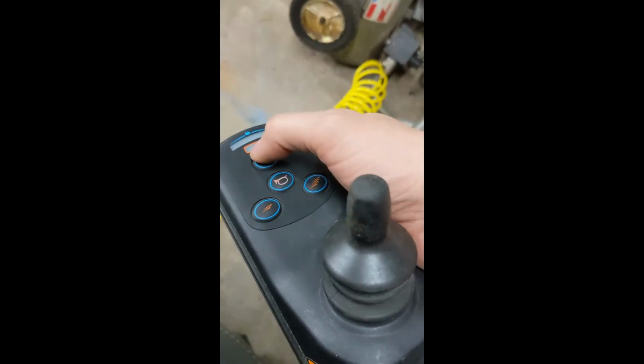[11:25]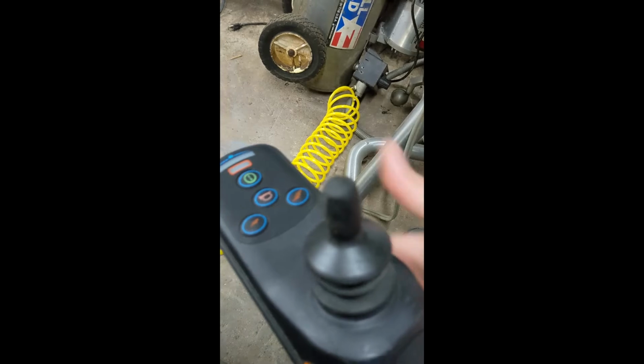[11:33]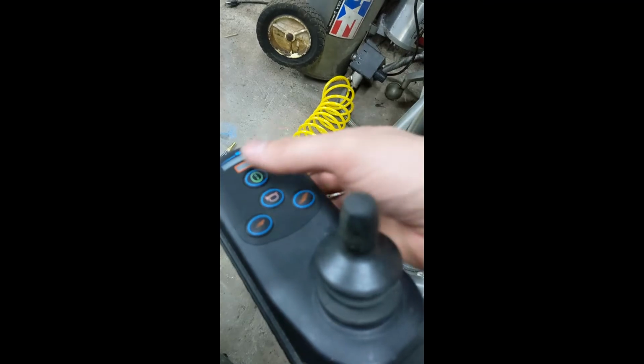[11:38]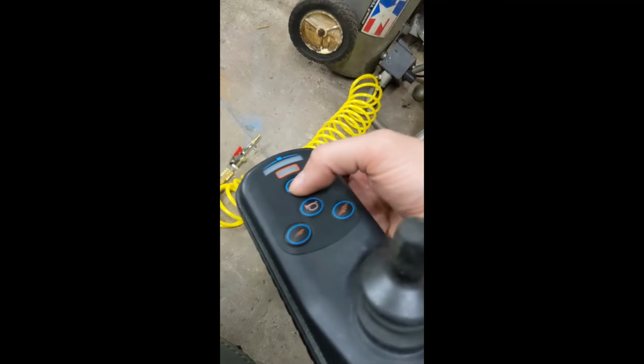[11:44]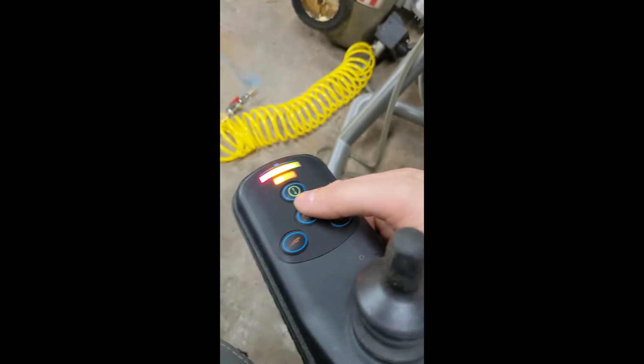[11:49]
I found an example online. Apparently what needs to happen is, with this thing still disassembled, you have to unplug the internal connector for the joystick here and power the thing on. That'll give you one light here and the yellow dial here, not the upper one, but the lower one. Then power it off, unplug all of this from the chair, plug this controller back inside the housing, and power it back on. And what is supposed to happen is it's supposed to do what you can see it doing here, working as it is intended to. Now, in my case, it didn't do that instantly.
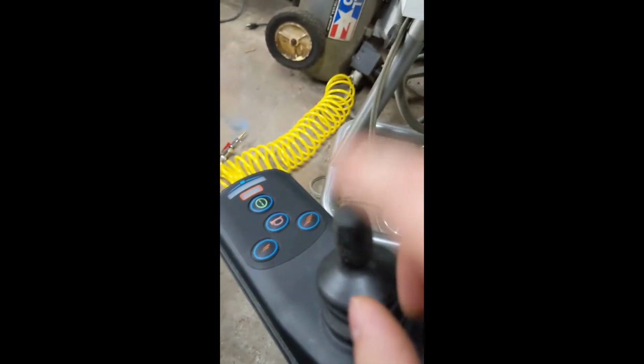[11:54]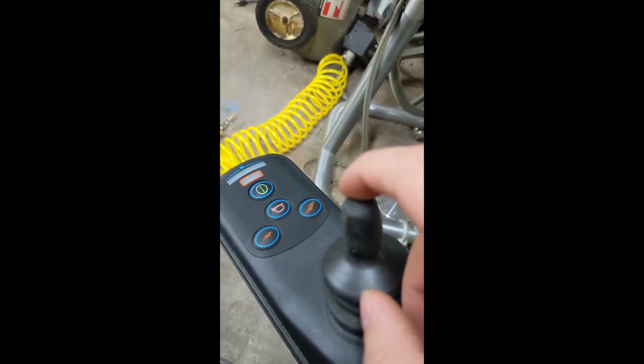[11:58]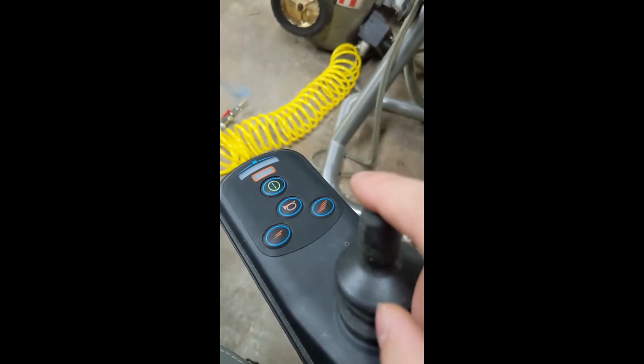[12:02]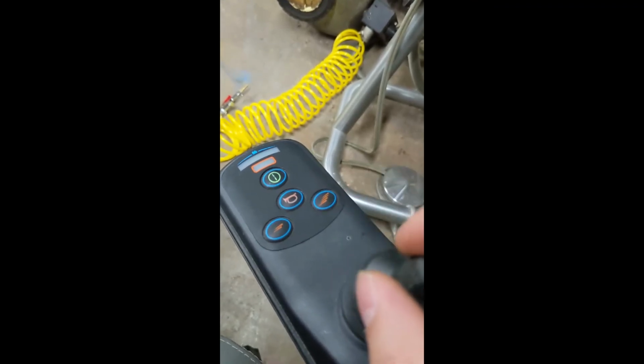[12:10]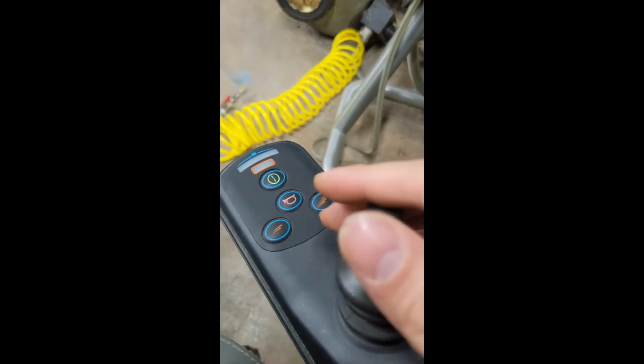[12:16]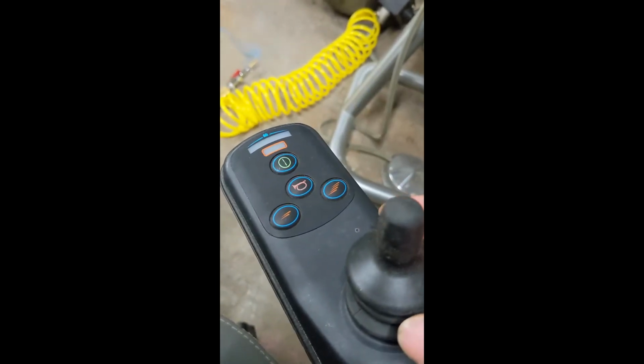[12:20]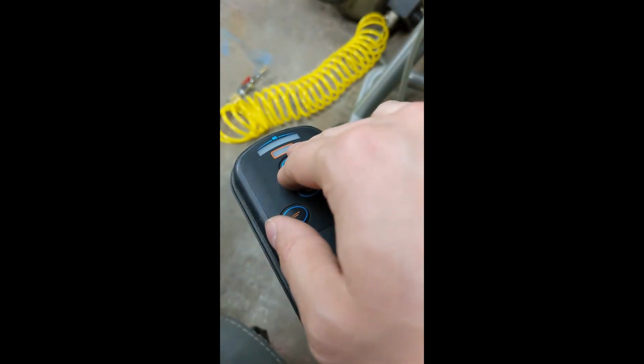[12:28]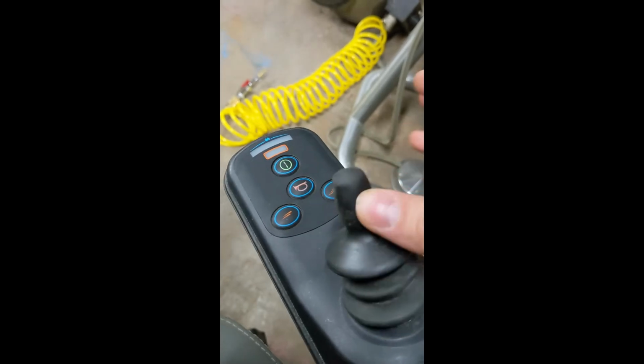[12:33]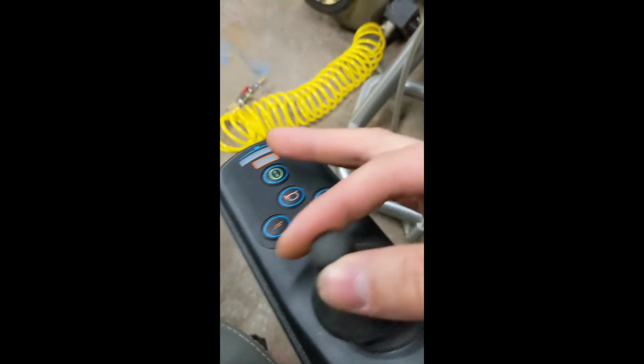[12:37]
Doing the unplug, replug, and power back on got me part of the way, but it didn't do all of it. Now, I did not do any further work after that point. All I did was the high-tech term of futzing with it. Yes, I know. That was just manipulating the joysticks in various ways as I powered it on and off, hitting these two buttons here, unplugging it, replugging it, plugging the power charger into the front, and somewhere along the way, in about 5 minutes of futzing with it, doing no other repairs internally or externally, we went from having 7 flashing lights to having steady flashing lights when I would hold it forward and then power it on. And then I would get a couple of seconds of moving around, and then it would go back to 7.
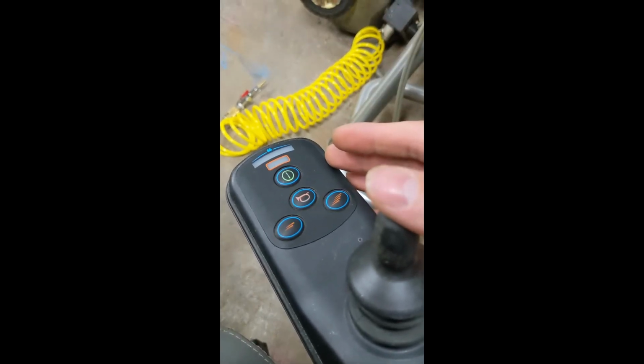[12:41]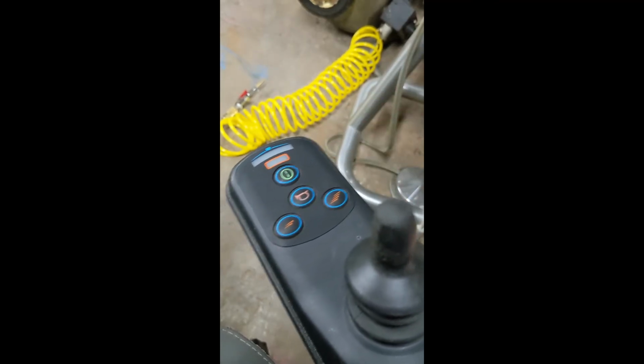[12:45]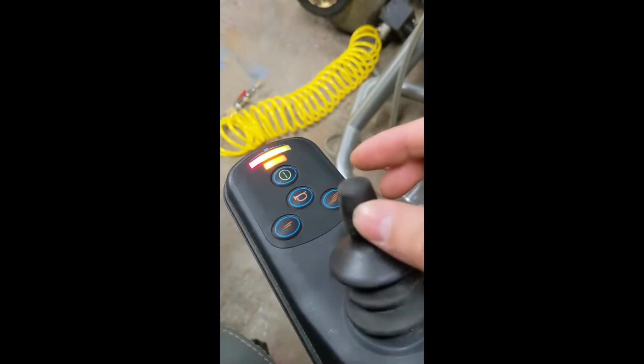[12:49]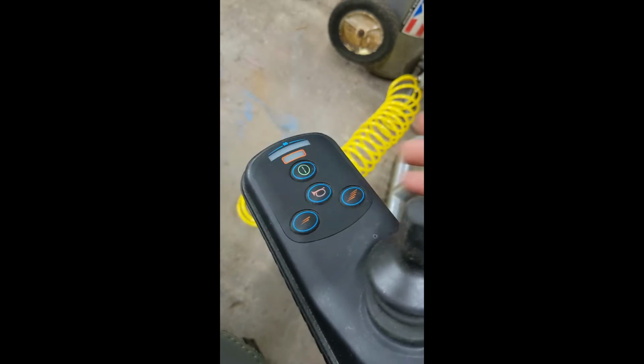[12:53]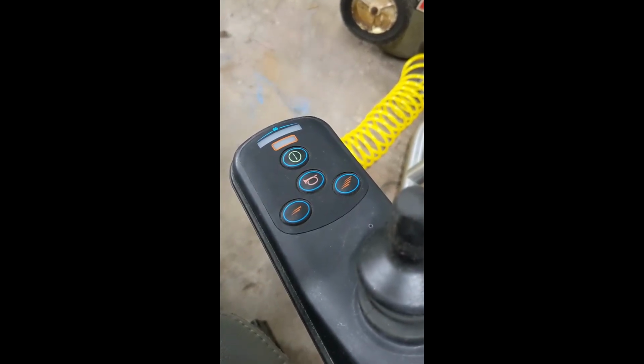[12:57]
And I just kept doing that, and after about 5 minutes of high-tech futzing with it, just using the controls, we got to where we are now, in which the chair responds like it's supposed to and works, for the grand total price of $7 and change from Amazon for 3 new capacitors. Now, that last part, how we got there, I do not know. But I know this is like the 7th or 8th time I've powered this on. It does not seem like it's about to die.
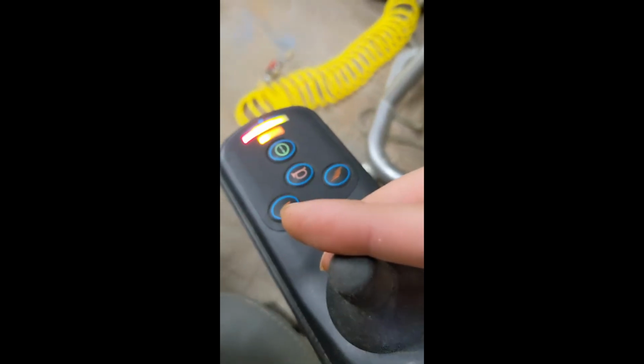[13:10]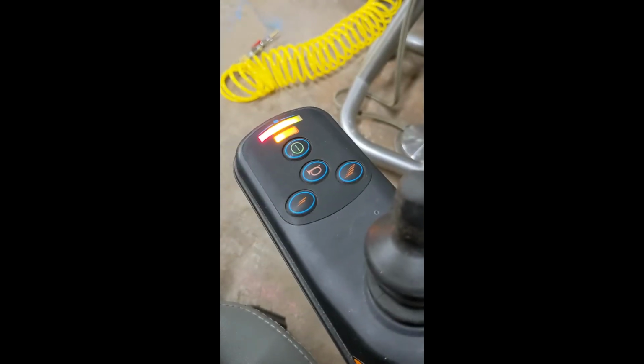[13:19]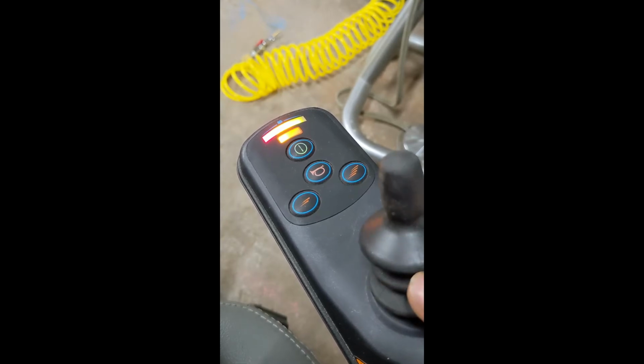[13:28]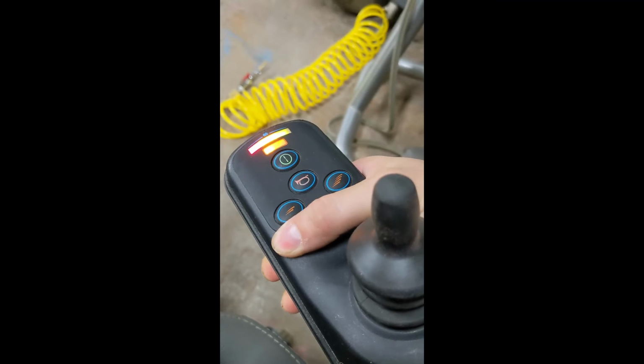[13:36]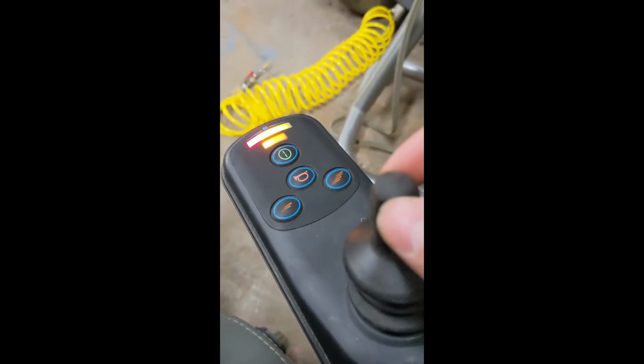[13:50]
I took it on a run down the street. It worked fine. And since it's gone into this mode where it works properly, I have not seen 7 lights flashing again, and it's worked. So yeah, replacing those 3 capacitors for $8 will get you to either a fix or the 7 flashing lights. And if it takes you to 7, just do that trick where you unplug this internally in the housing, plug the whole housing in with power, turn it on, you get one light here solid, unplug this, replug this in the housing, plug the whole thing back in, and either that will fix your problem or that will fix your problem with a little bit of futzing here.
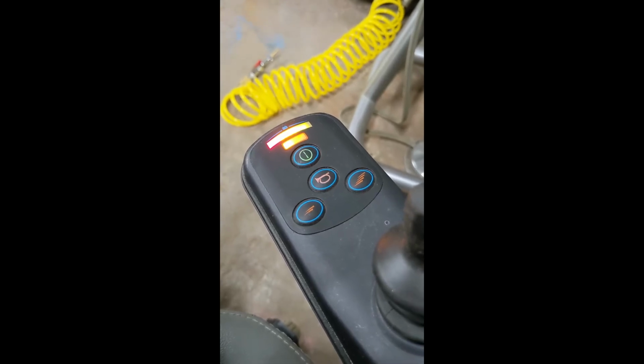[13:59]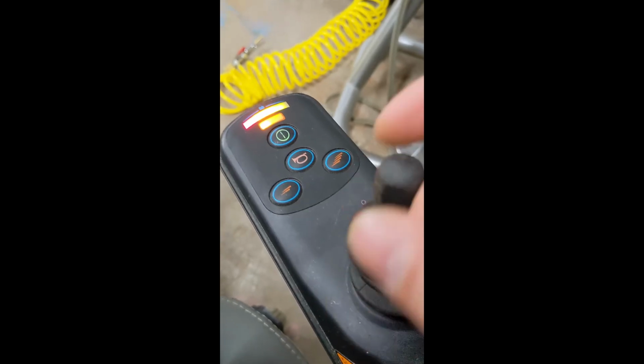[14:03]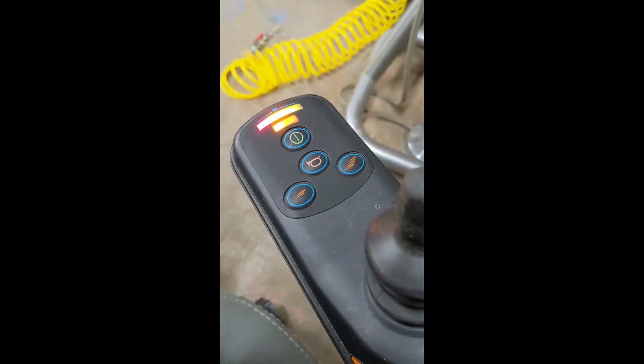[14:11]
So if you can do some basic soldering, if you can replace 3 capacitors, for about $7-8, you have very, very good odds of fixing this. I wish I could give you more details of exactly which of the little button presses I did here got us from 7 flashing lights back to full strength. I don't know, but for $8, I think it's probably worth your time. Best of luck to everybody on this.
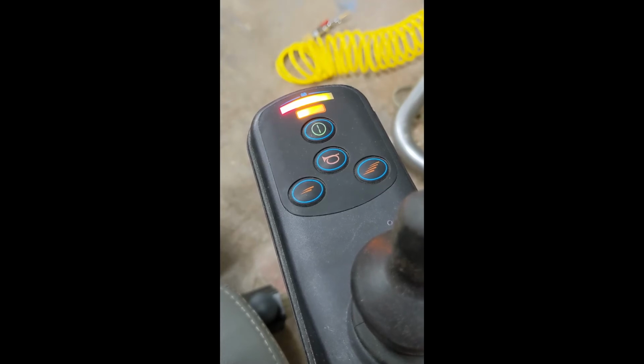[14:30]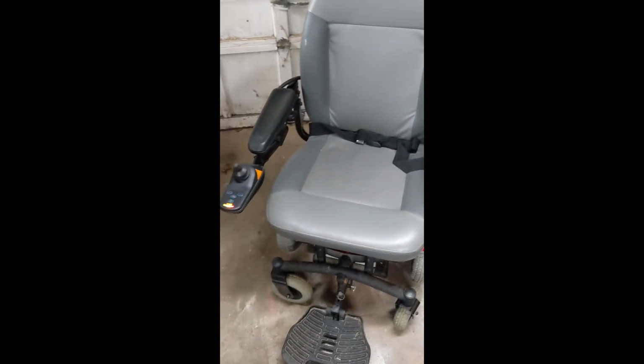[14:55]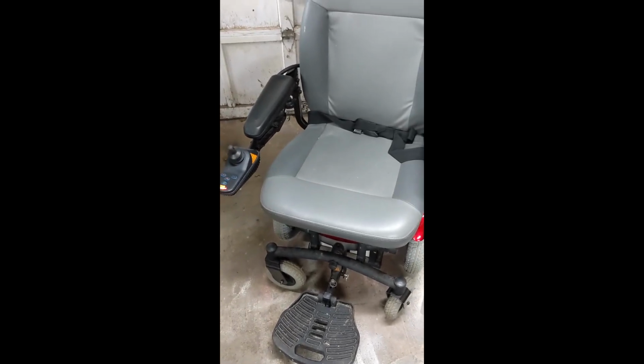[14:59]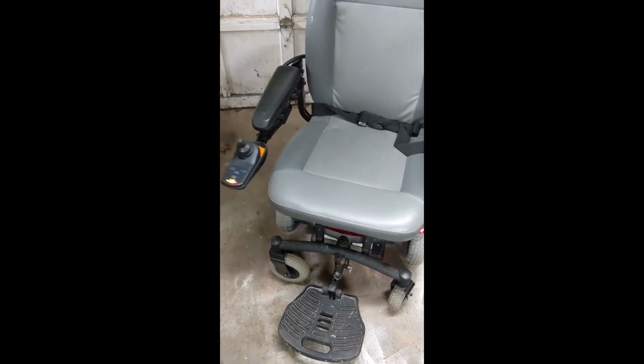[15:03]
And one final shout out, if you find yourself dealing with other medical technologies like this, there is another thing that you might benefit from being aware of. Frank's Hospital Workshop. There is a website entitled Frank's Hospital Workshop, which does not do videos like what I've done here, but he does do a few videos, and he hosts a lot of repair manuals and how-to guides. Frank's Hospital Workshop is targeted at developing nations where they see a great deal of surplus equipment, like this chair, where it might be obsolete in America, but it still works fine and you can use it in whatever country you happen to be. But trying to find manuals and repair guides for it is really hard, and of course, it's no longer supported by the manufacturer anymore.
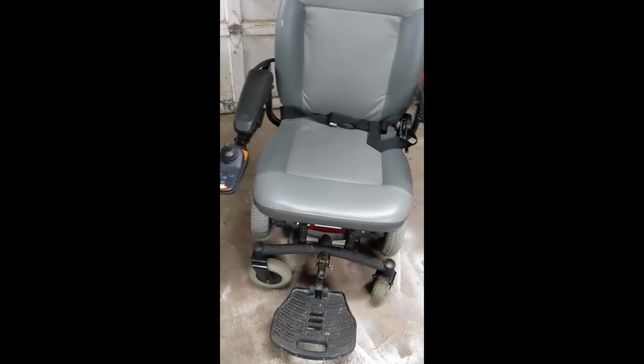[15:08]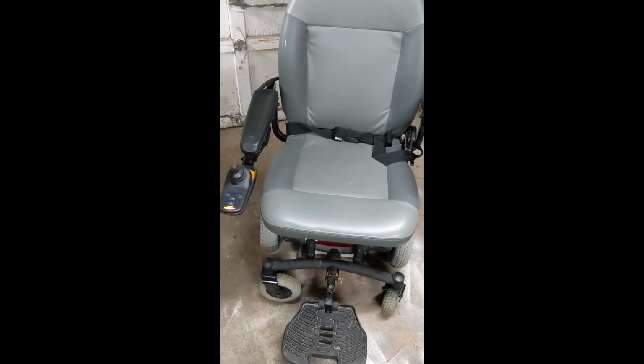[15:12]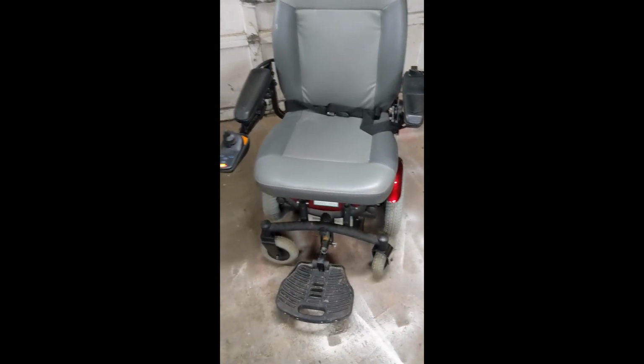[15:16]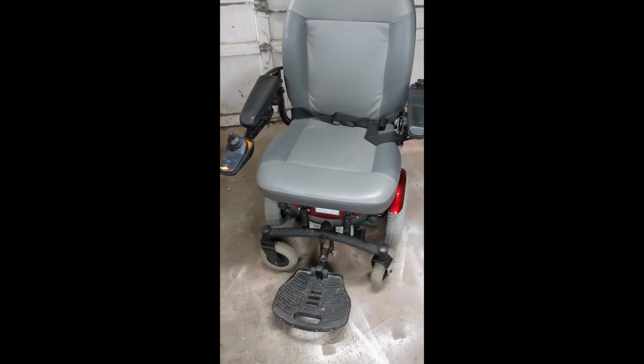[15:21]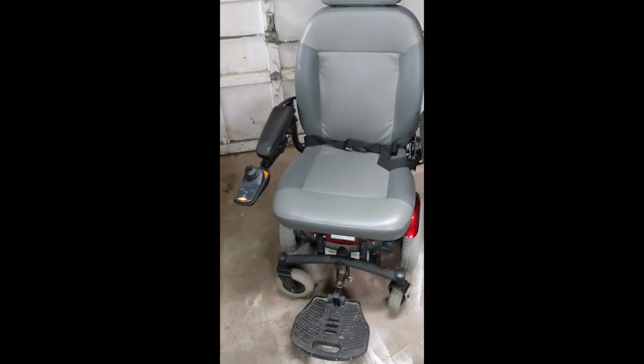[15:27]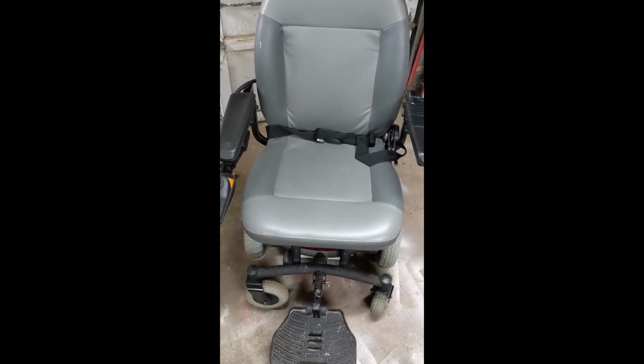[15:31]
So if you stumbled across this because you're an American user and you want this thing to work again, great. $8 and a couple hours will probably get you to a working chair. If you are in a foreign country, especially if you're a hospital user, nurse, doctor, what have you, look up Frank's Hospital Workshop. It is an excellent resource for how to do this kind of generic repair work. Best of luck to you, and I hope you have an uneventful day.